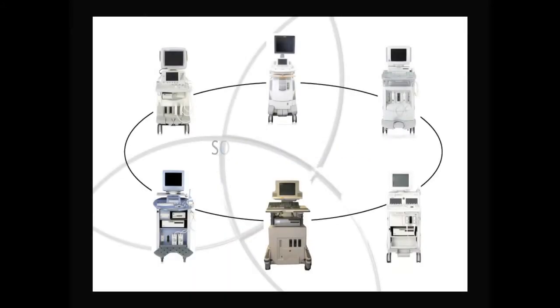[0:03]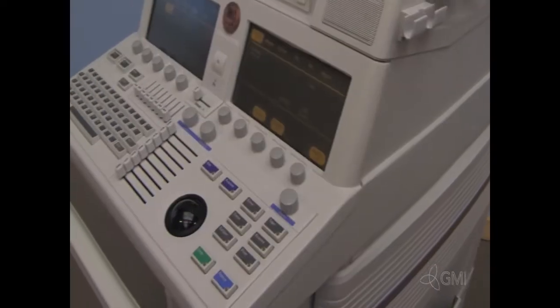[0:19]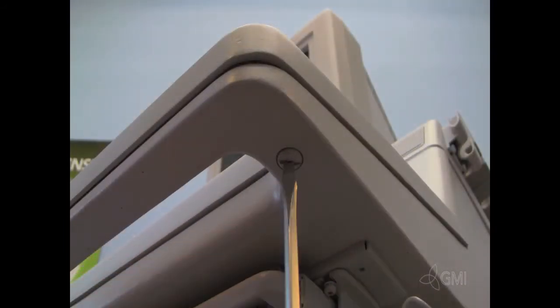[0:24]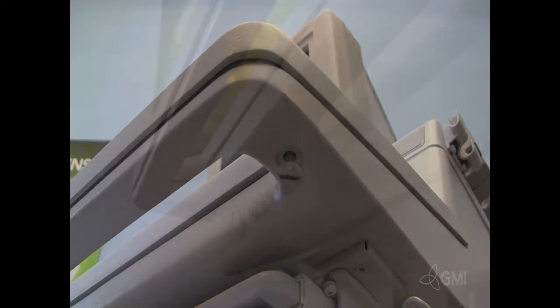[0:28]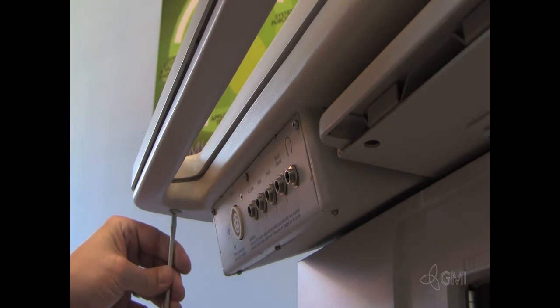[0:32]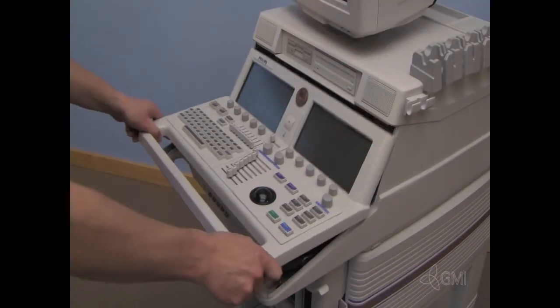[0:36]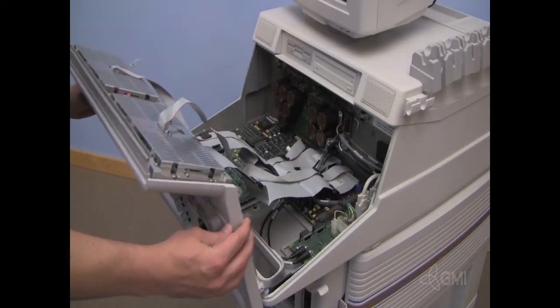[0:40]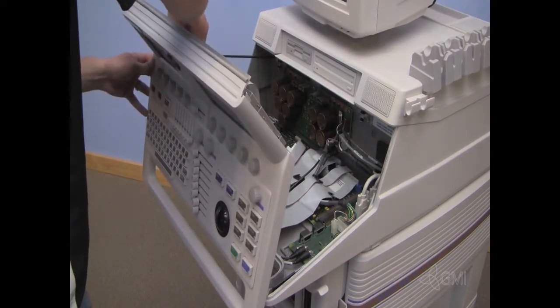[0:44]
With the system off, remove the two screws from the underside of the keyboard. Lift from the bottom and tilt the user interface out. Use the support rod to secure the UI.
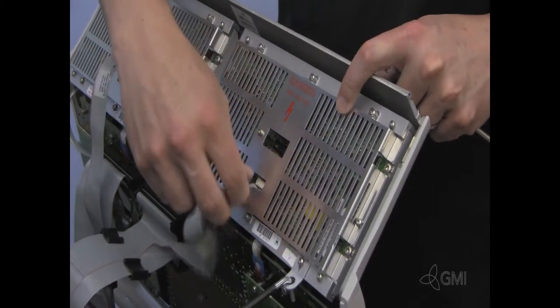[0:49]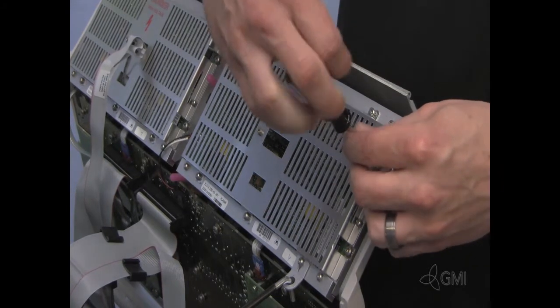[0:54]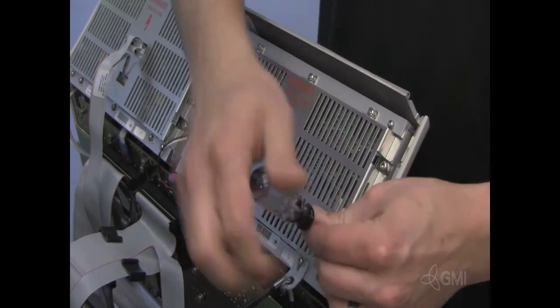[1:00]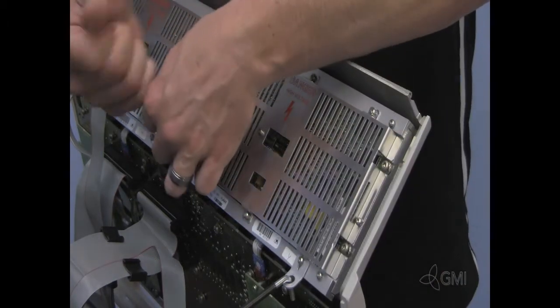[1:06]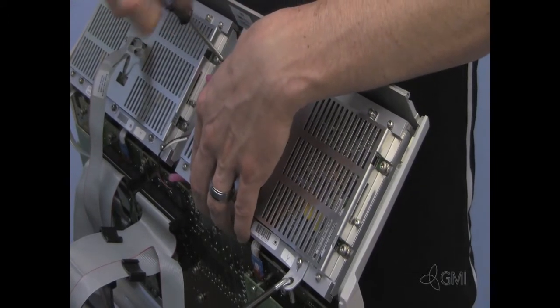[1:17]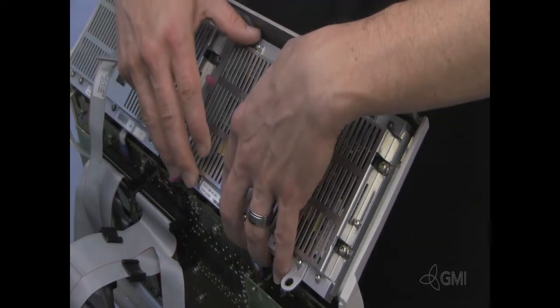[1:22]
Unplug cables from the back of the EL panel. Remove the four Torx screws. Remove the support rod. Remove the EL panel from the system.
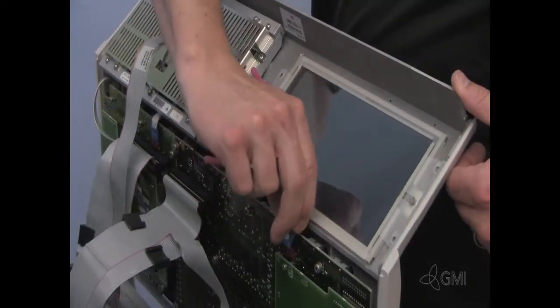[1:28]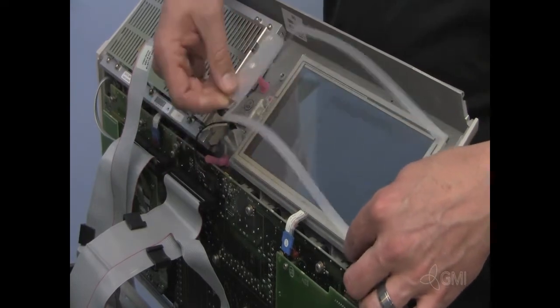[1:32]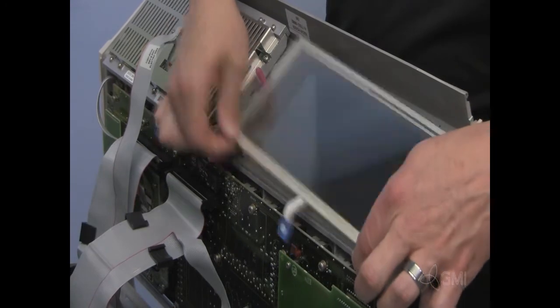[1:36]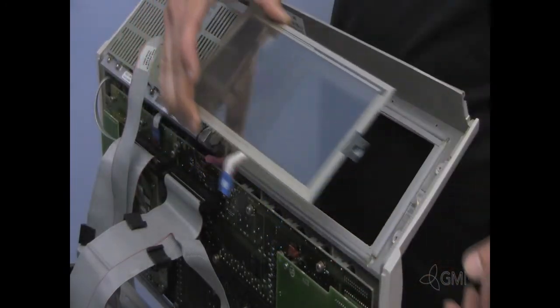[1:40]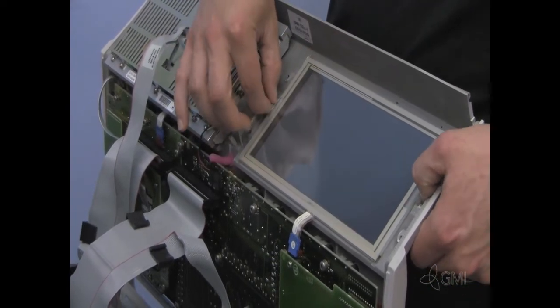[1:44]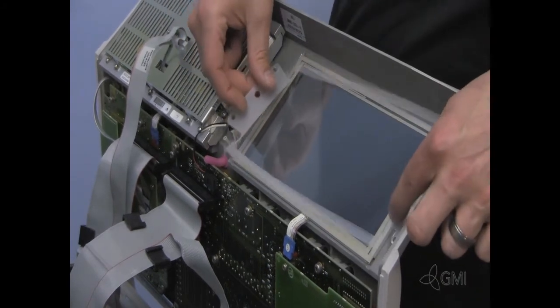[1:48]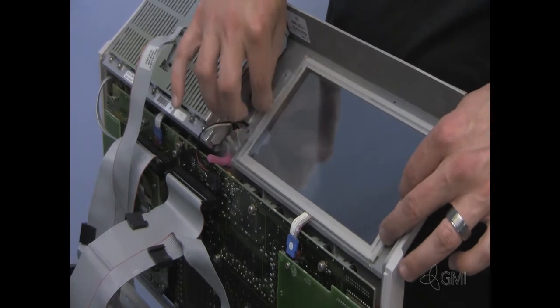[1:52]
Unplug the touchscreen cable. Remove the touchscreen. Install the new touchscreen and apply the Mylar insert. Reconnect the touchscreen cable.
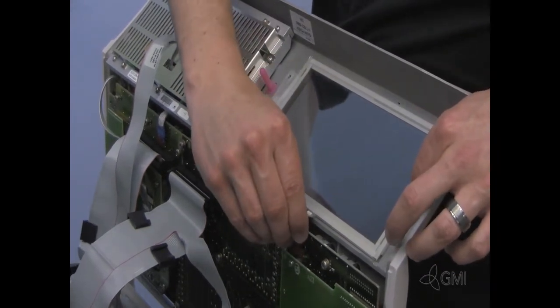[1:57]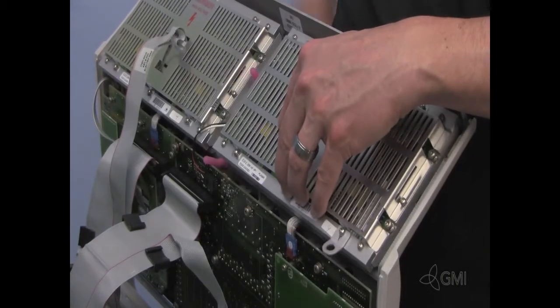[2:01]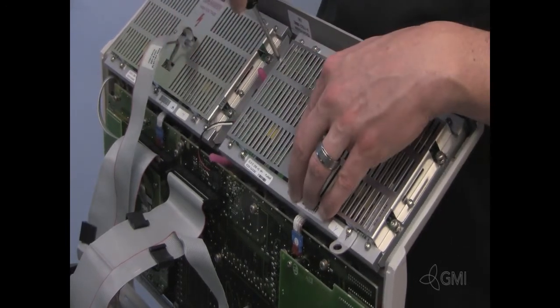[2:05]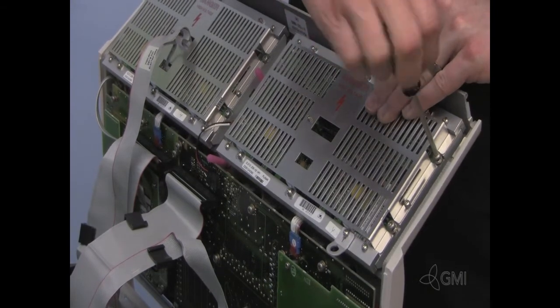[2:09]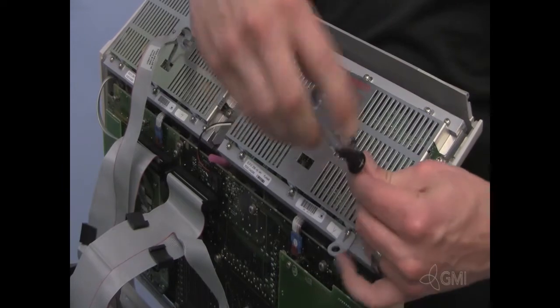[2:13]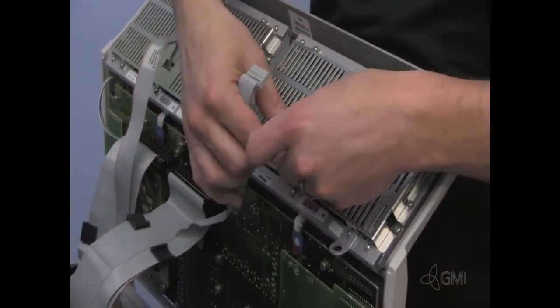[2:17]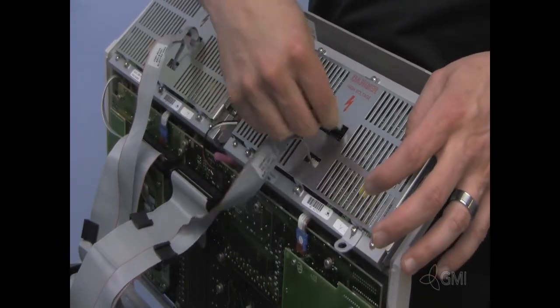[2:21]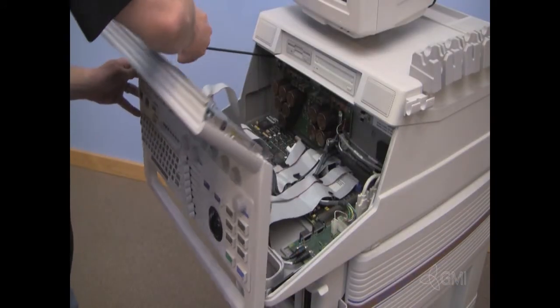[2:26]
Reinstall the EL panel. Install the four Torx screws. Reconnect the cables to the back of the EL panel. Close the UI assembly.
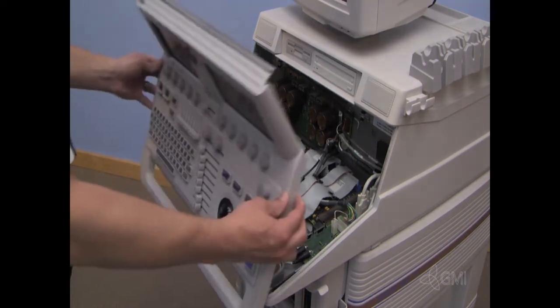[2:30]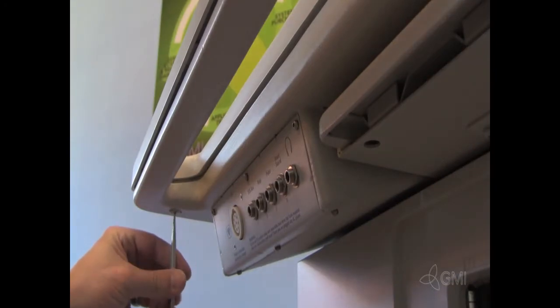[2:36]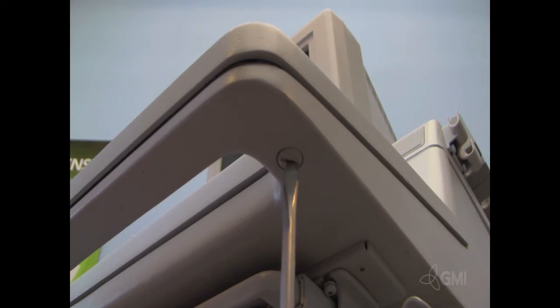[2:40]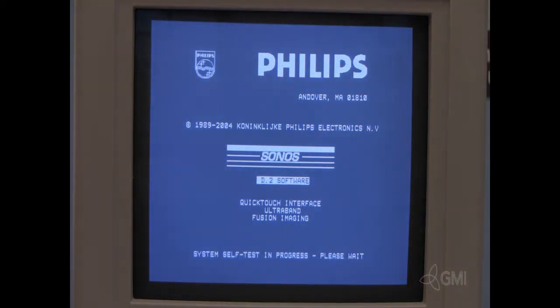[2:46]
Secure the UI with the two screws underneath. Power the system on. If the system does not boot, refer to the flash programming video.
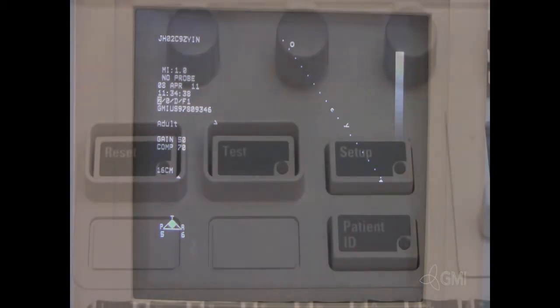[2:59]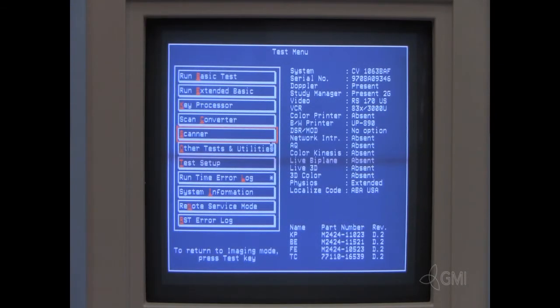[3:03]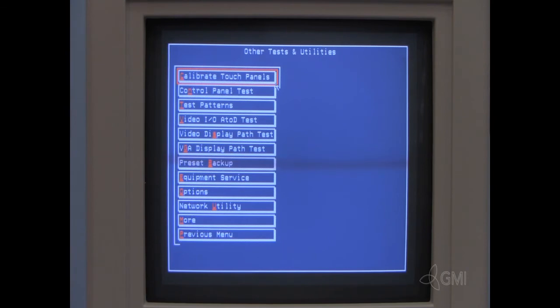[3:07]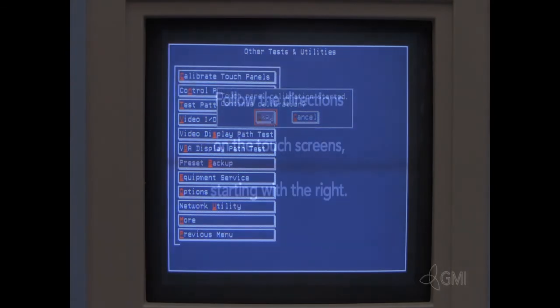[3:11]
After the system is booted, press the test button. Select other tests and utilities. Select calibrate touch panels. Select OK.
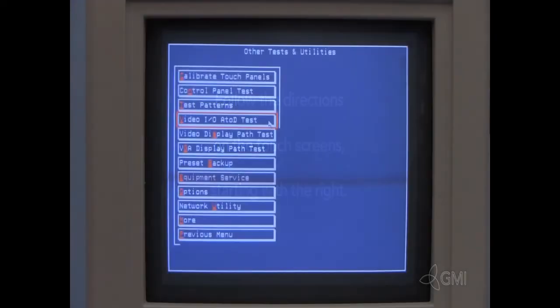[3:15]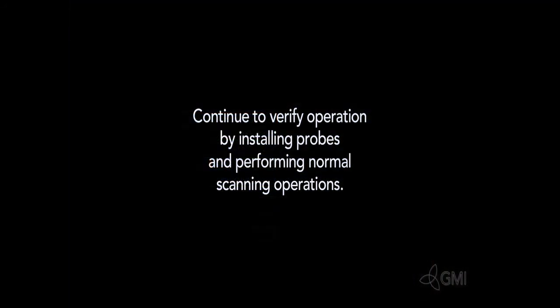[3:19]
Starting with the right touch screen, press the plus sign to calibrate. Once the calibration is complete, press the test button. Continue verification by installing probes and performing normal operations.